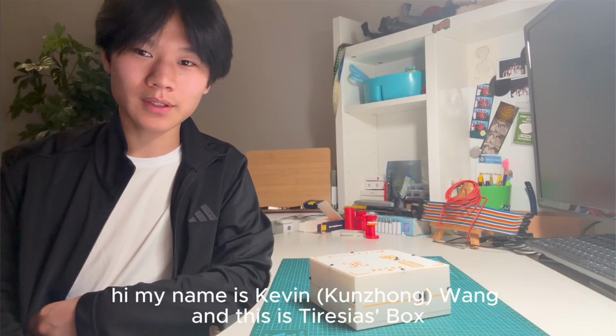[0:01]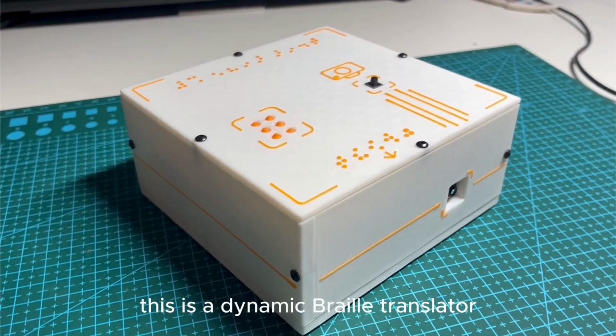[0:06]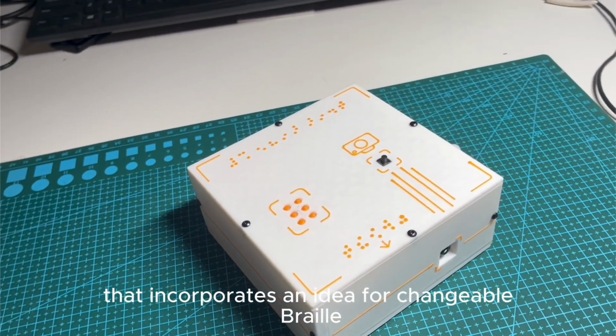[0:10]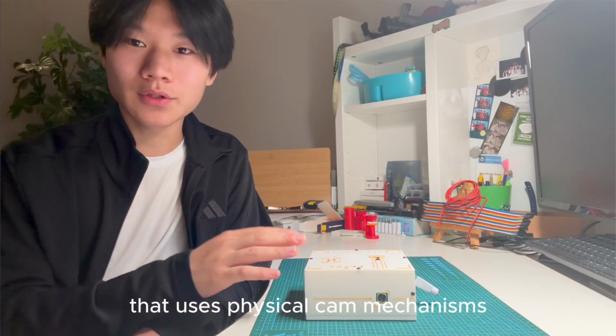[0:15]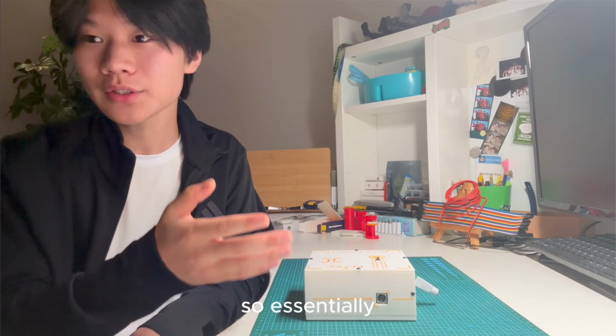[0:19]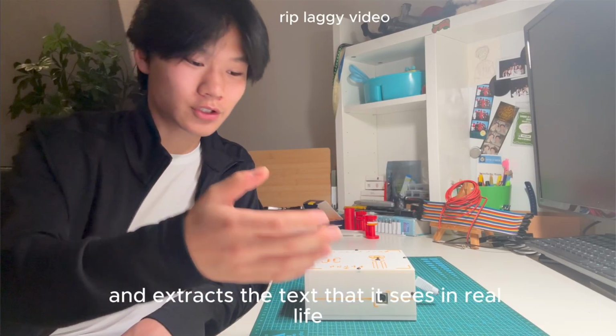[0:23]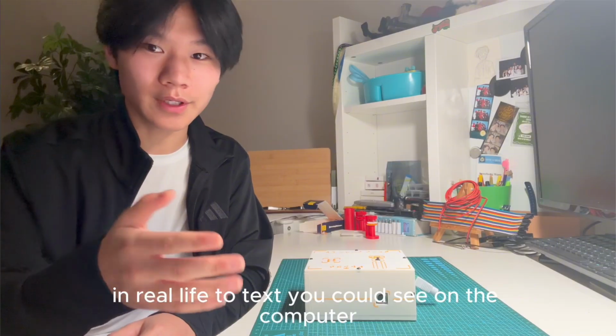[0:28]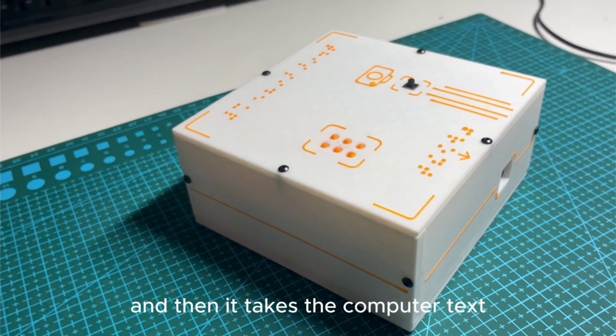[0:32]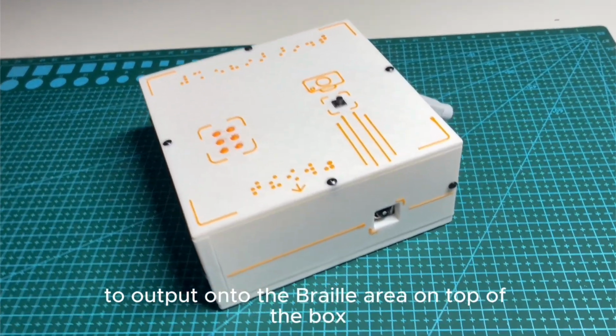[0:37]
This is a dynamic Braille translator for both English and Chinese that incorporates an idea for changeable Braille that's never been presented before. This is the first ever Braille actuator that uses physical cam mechanisms to change the positions of the Braille dots. So essentially, this takes a picture using this camera right here and extracts the text that it sees in real life, and changes it from English and Chinese text in real life to text you could see on the computer. And then it takes the computer text and translates it into Braille to output onto the Braille area on top of the box.
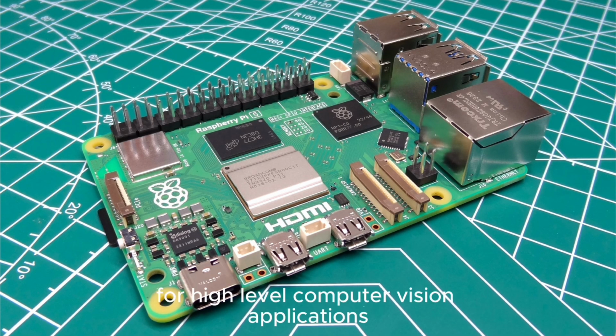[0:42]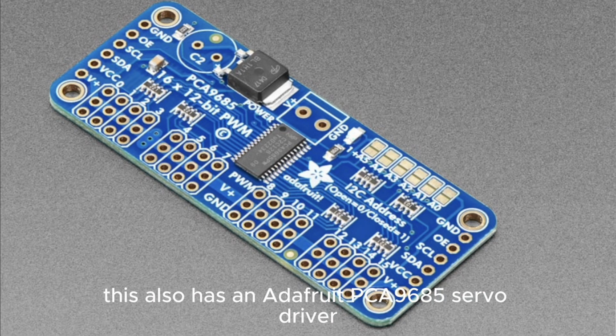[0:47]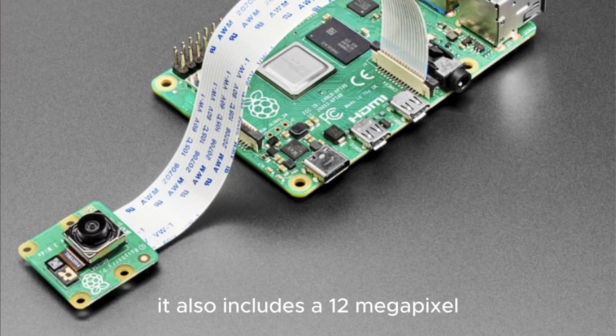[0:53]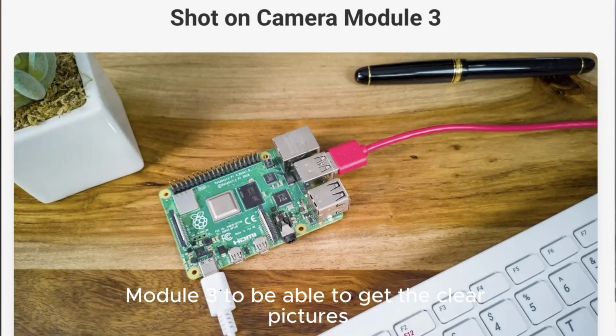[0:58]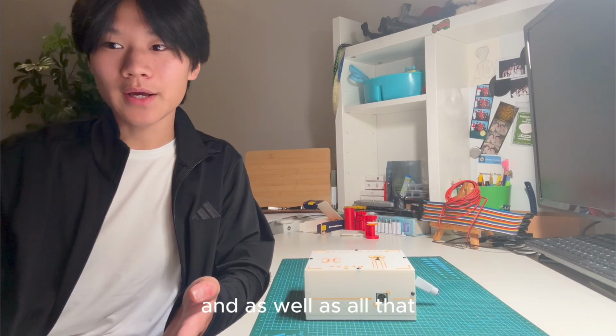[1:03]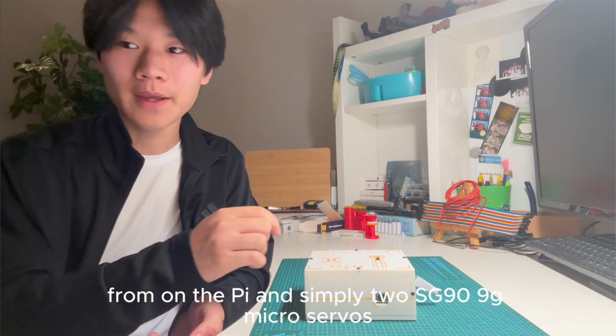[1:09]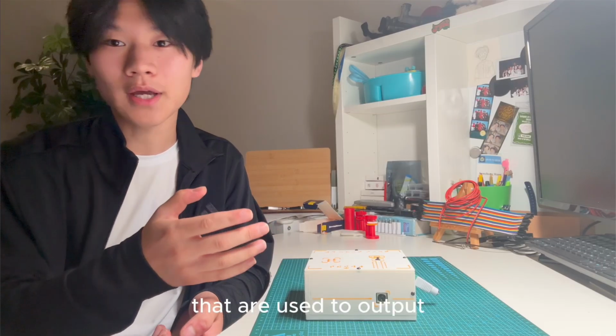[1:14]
This box is equipped with a Raspberry Pi 5 with 4GB RAM for high-level computer vision applications and electromechanical control. This also has an Adafruit PCA 9685 servo driver to safely power the servos used. It also includes a 12 megapixel autofocusing Raspberry Pi camera module 3 to be able to get clear pictures for CV analysis from any distance. And as well as all that, we also have a button soldered to two GPIO pins on the Pi and simply two SG90 9-gram micro servos that are used to output the entirety of the Braille alphabet as well as the number system.
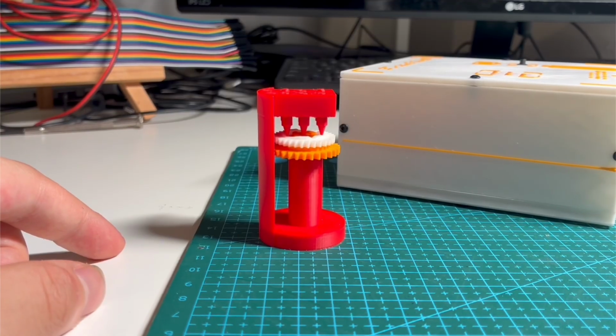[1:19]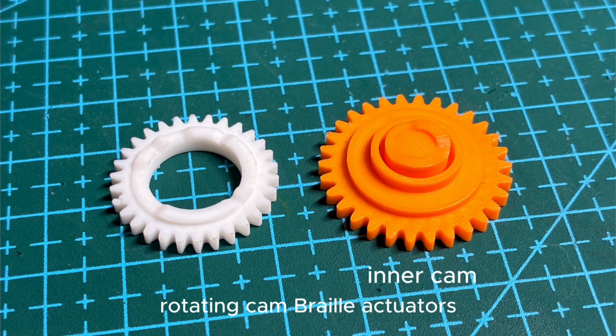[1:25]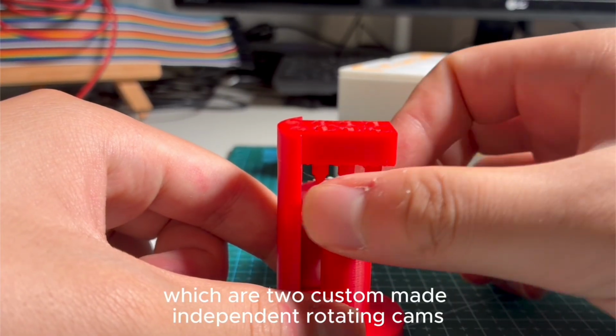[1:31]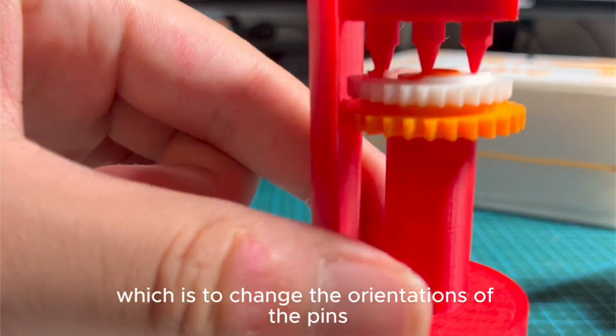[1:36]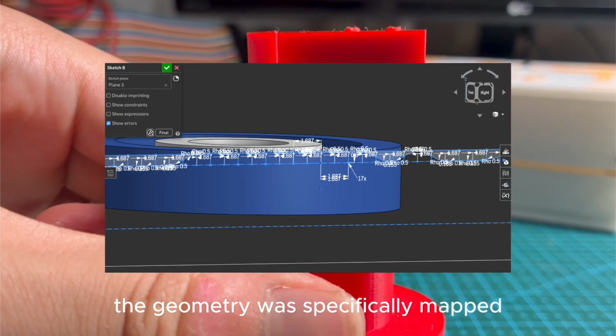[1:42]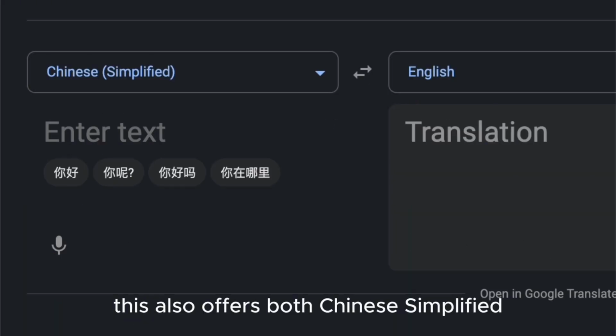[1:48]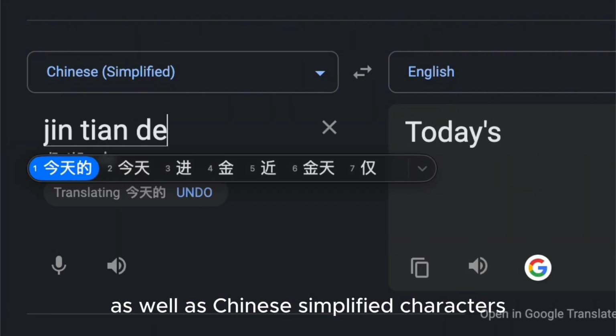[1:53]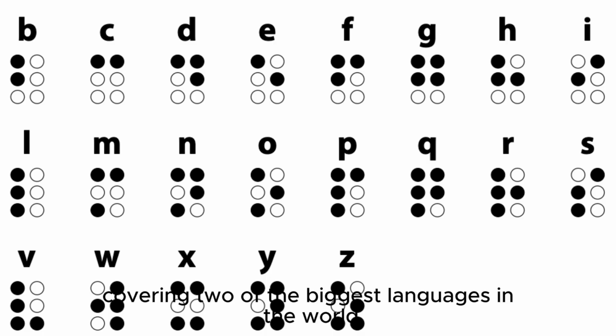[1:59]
So essentially, this project works by having these custom rotating cam Braille actuators, and this is the heart of the project, which are two custom-made independent rotating cams, each with a 3:2 gear ratio stacked on top of each other, which is to change the orientations of the pins, to be able to output every single letter in the Braille alphabet. The geometry was specifically mapped to be able to output all the letter combinations with the least amount of space. This also offers both Chinese simplified and English support, and this little box is able to extract English text as well as Chinese simplified characters and translate it into English and then to Braille, covering two of the biggest languages in the world.
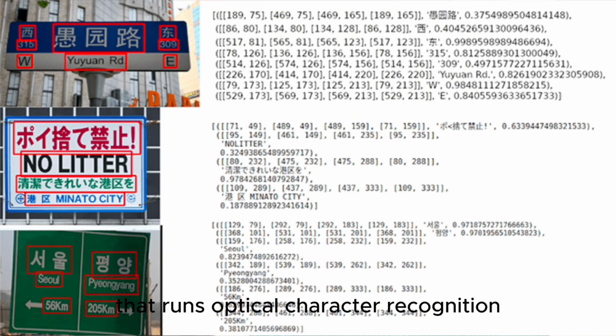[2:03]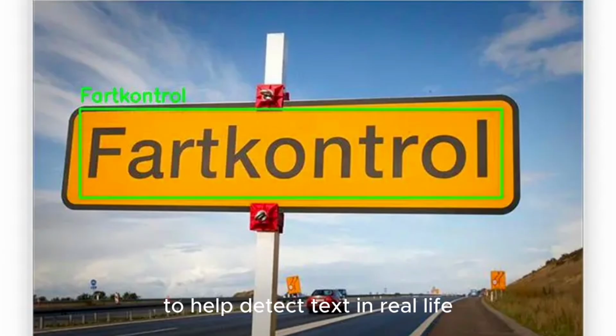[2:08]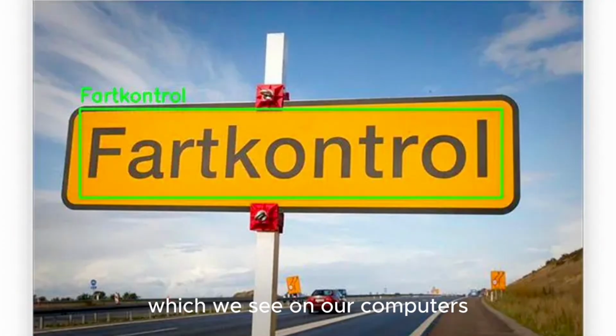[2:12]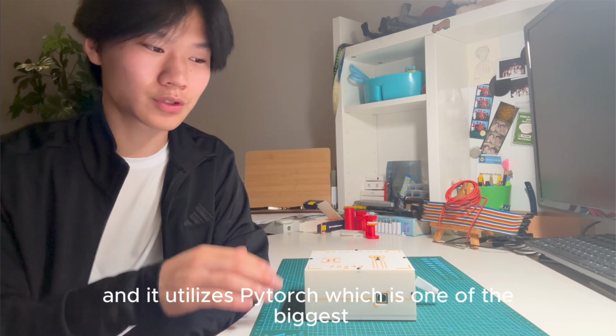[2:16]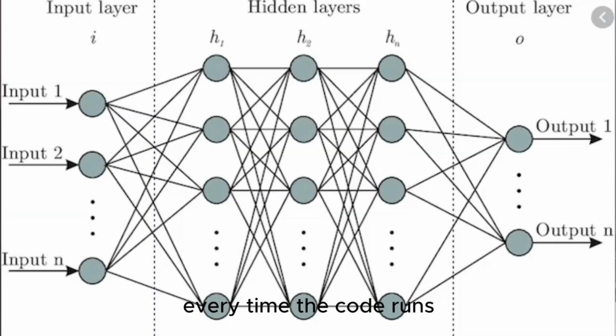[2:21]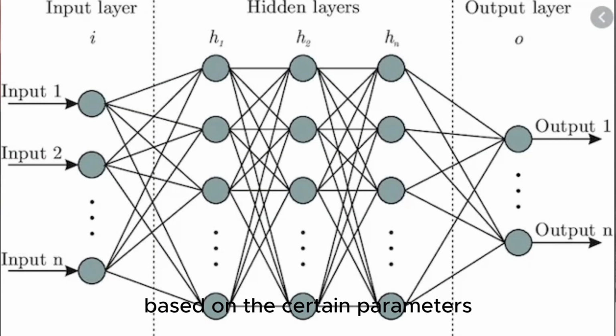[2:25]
The computer vision library I use is called EasyOCR, which is a library that runs optical character recognition, which is built on neural networks to help detect text in real life, and then convert it to the string characters which we see on our computers. I was able to code it directly with Python, and it utilizes PyTorch, which is one of the biggest machine learning frameworks for Python. Every time the code runs, the code creates a deep neural network model based on certain parameters to help you detect text and extract text in real life.
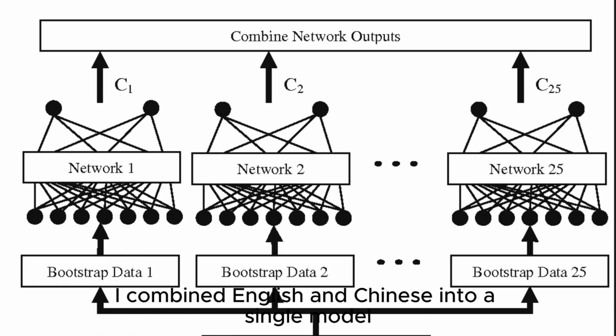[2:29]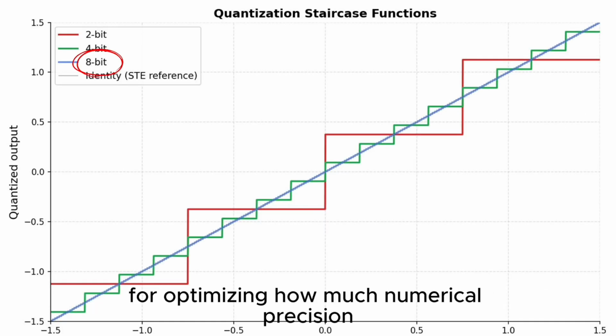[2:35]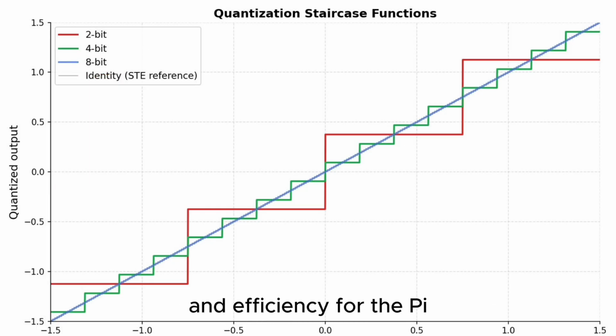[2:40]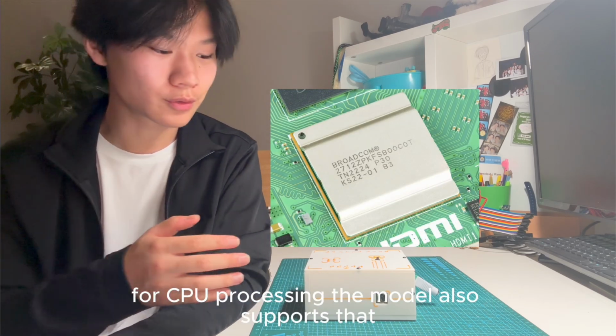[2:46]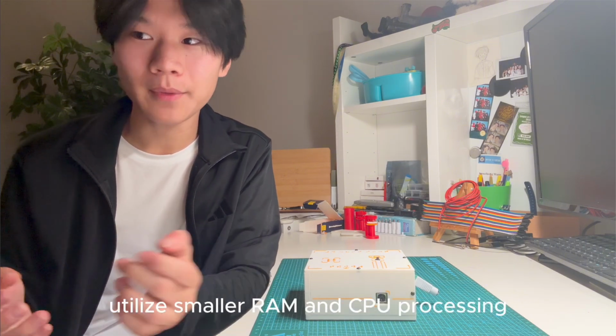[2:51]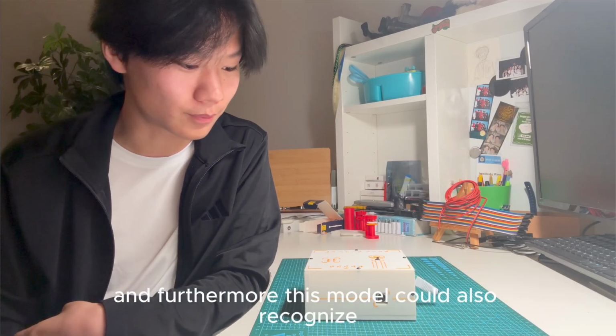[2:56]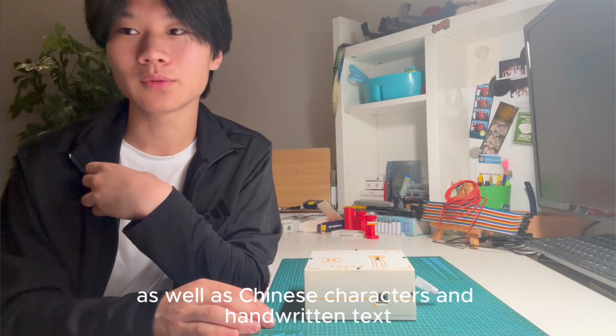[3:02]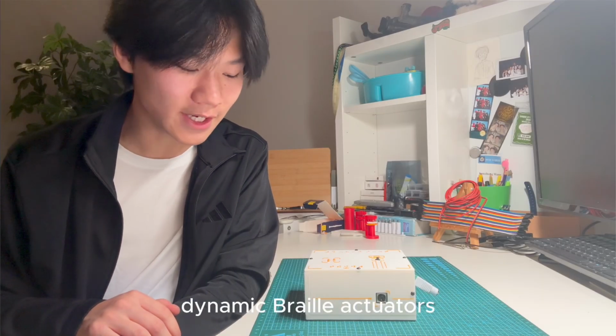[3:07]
I combined English and Chinese into a single model, as well as used a quantized model using 8-bit integers for optimizing how much numerical precision the model outputs, to reduce the latency and improve the processing speed and efficiency for the Pi. Since the Raspberry Pi is mainly used for CPU processing, the model also supports that, and using a quantized model, it is also able to utilize smaller RAM and CPU processing, which initially uses GPU and VRAM. And furthermore, this model could also recognize numerous different font sizes and font styles, as well as Chinese characters and handwritten text. So how is this different from existing dynamic Braille actuators?
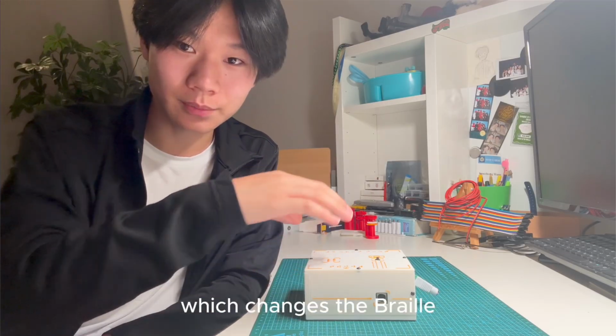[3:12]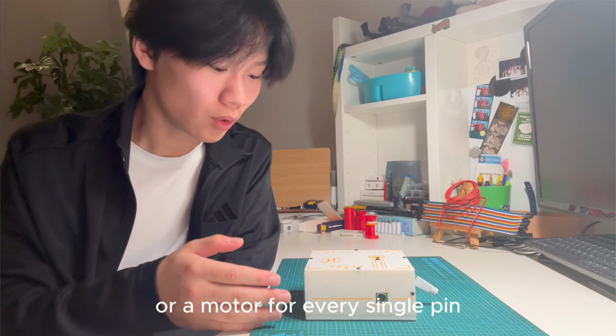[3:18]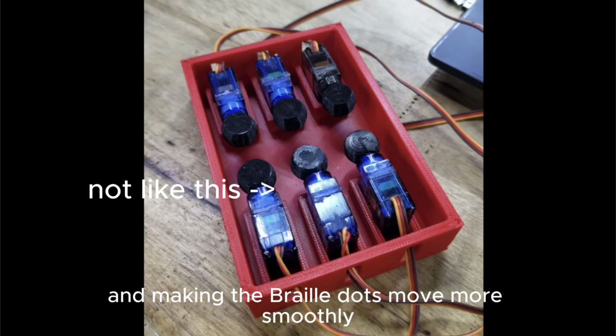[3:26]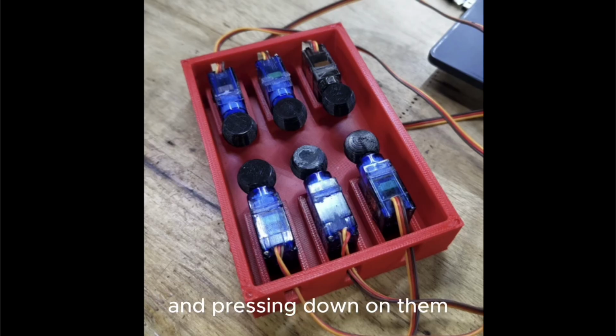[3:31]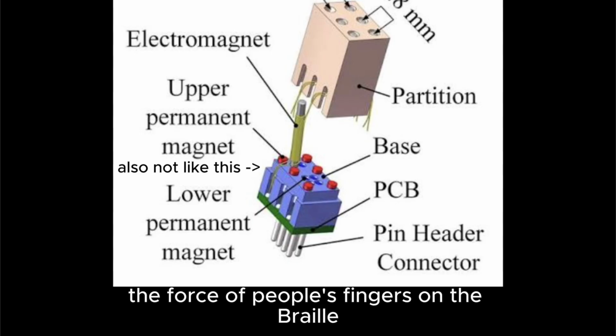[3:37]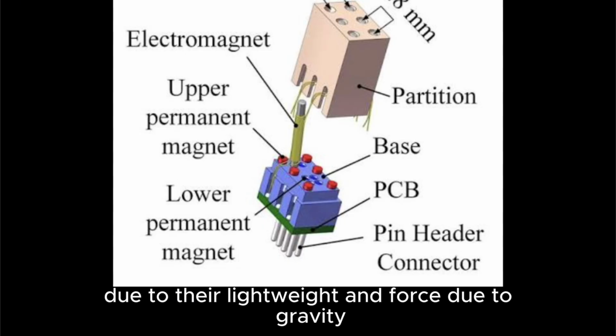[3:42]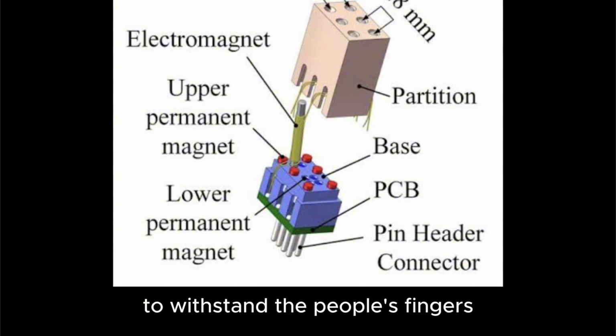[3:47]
So my unique approach uses a physical cam mechanism which changes the Braille rather than using existing models such as electromagnetic actuators or a motor for every single pin. Some of the main goals I hope to accomplish are using as few motors as possible and making the Braille dots move more smoothly but also stay rigidly in place when people's fingers are moving across them and pressing down on them. Many electromagnetic designs are not strong enough to hold up the force of people's fingers on the Braille, and the Braille pins in mine are in constant contact with the cam due to their light weight and force due to gravity, so they will have more than enough normal force to withstand people's fingers.
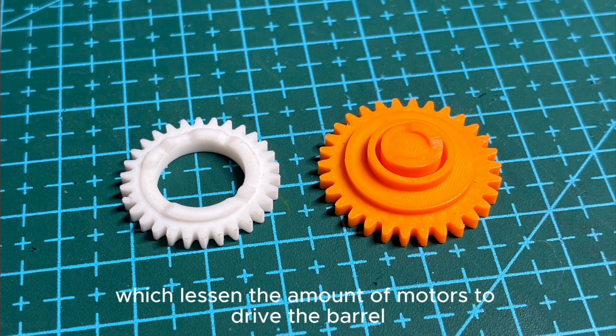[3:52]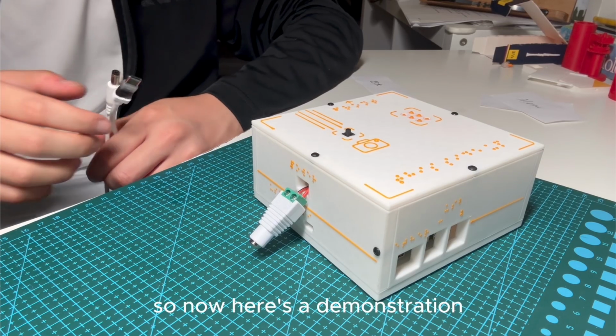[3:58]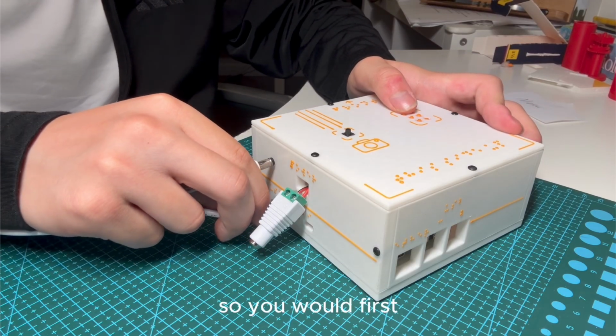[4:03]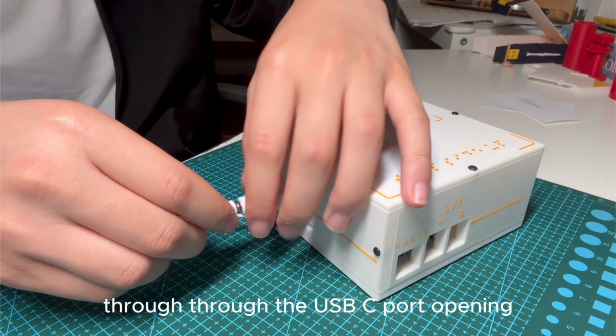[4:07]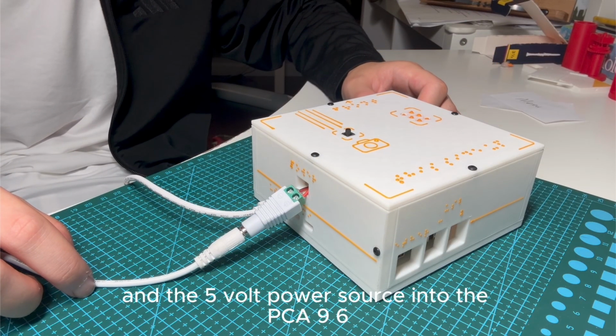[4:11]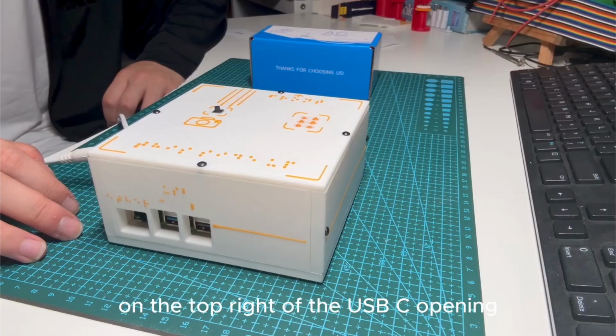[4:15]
Furthermore, I also separated the cams into an inner and outer cam, which lessened the amount of motors to drive the Braille down to 2 servos to control the movement of all 6 pins. So now here's a demonstration of how this Braille actuator works. So you would first plug in the USB-C power source into the Raspberry Pi through the USB-C port opening, and the 5-volt power source into the PCA 9685 through the opening on the top right of the USB-C opening.
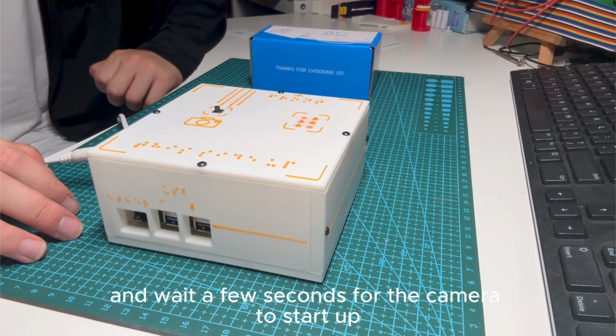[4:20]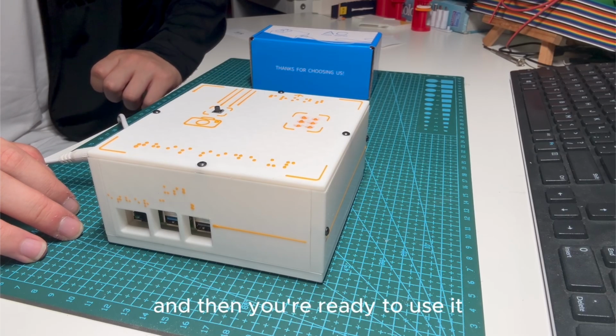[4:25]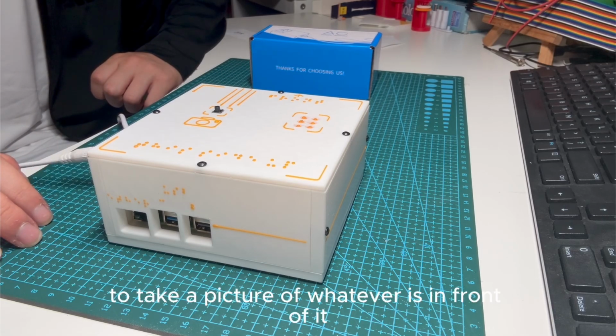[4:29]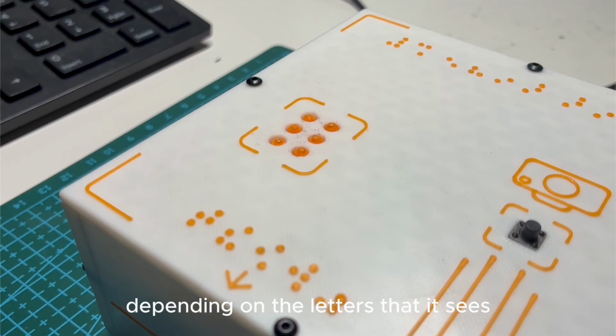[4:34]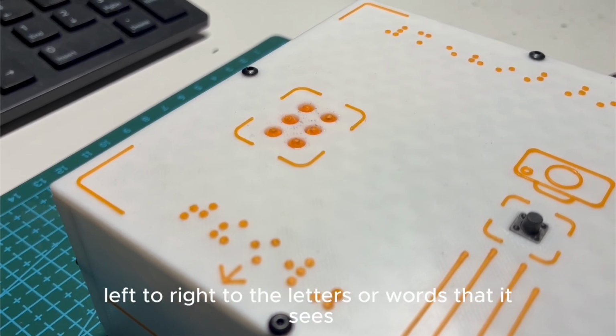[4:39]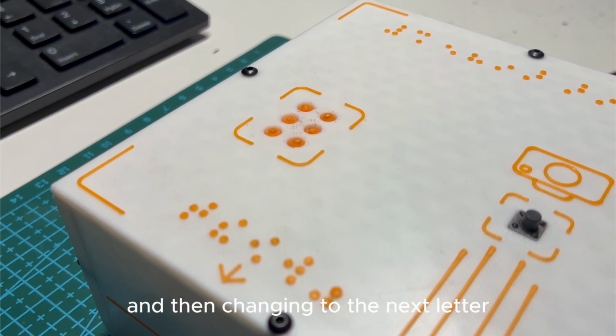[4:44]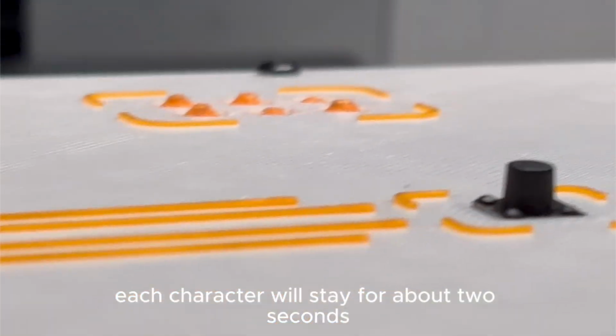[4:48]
Secondly, you would boot up the Raspberry Pi and wait a few seconds for the camera to start up and adjust to its surroundings, and then the Braille will move to its initial positions and then you're ready to use it. And then third, press the button to take a picture of whatever is in front of it, and the dynamic Braille will automatically change depending on the letters that it sees. It will go in order from left to right to the letters or words that it sees, first displaying the leftmost letter, and then changing to the next letter, and so on until all the text is displayed. Each character will stay for about 2 seconds until the next one is displayed.
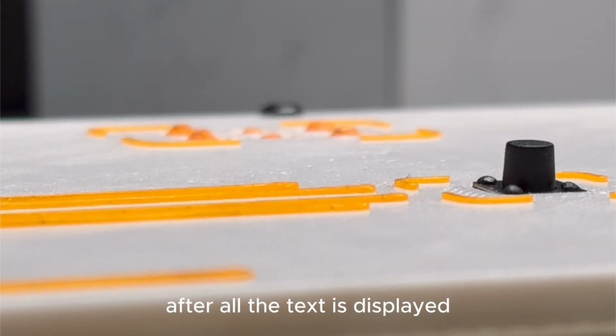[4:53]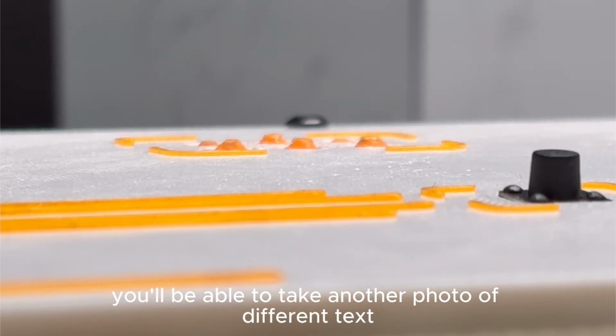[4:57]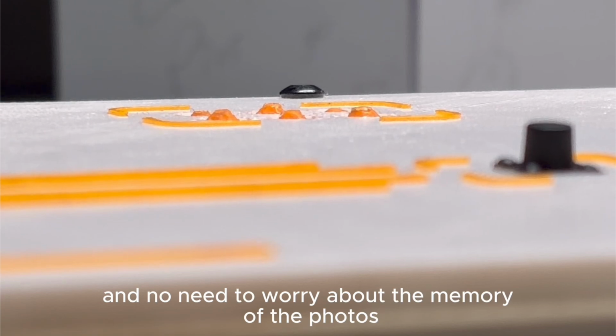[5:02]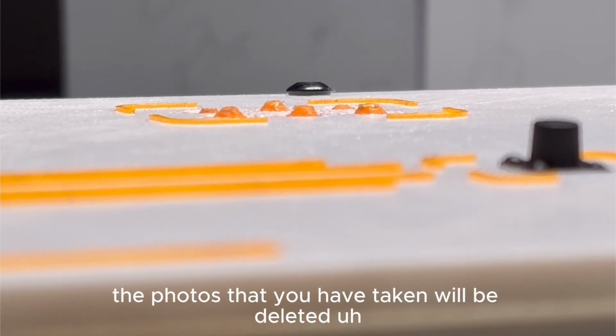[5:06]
After all the text is displayed and the Braille is no longer changing, you'll be able to take another photo of different text and it'll show those different texts. And no need to worry about the memory of the photos, since after each translation, the photos that you have taken will be deleted to save storage.
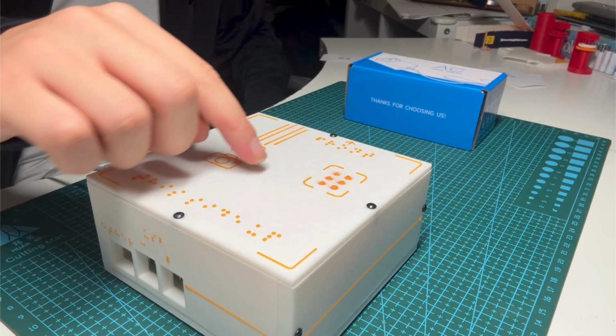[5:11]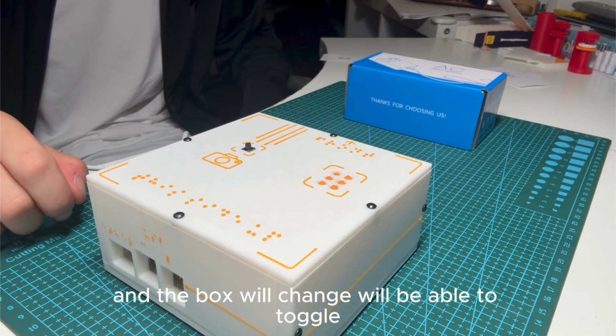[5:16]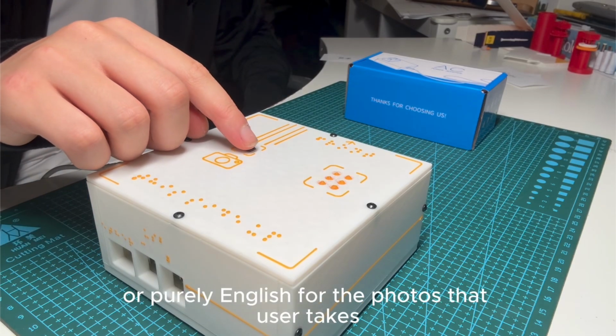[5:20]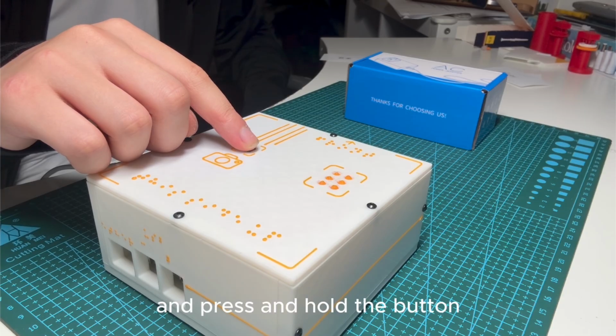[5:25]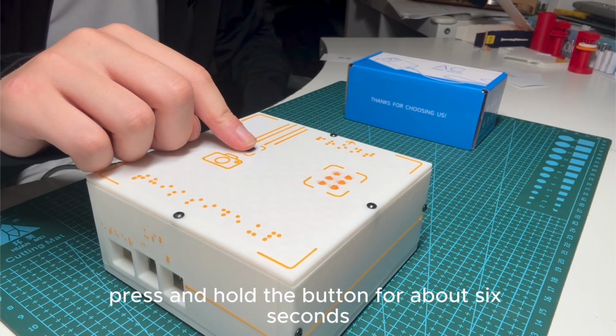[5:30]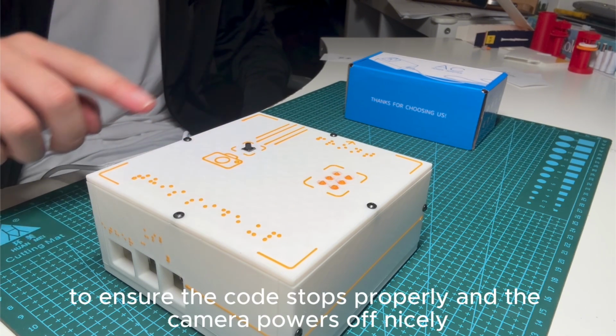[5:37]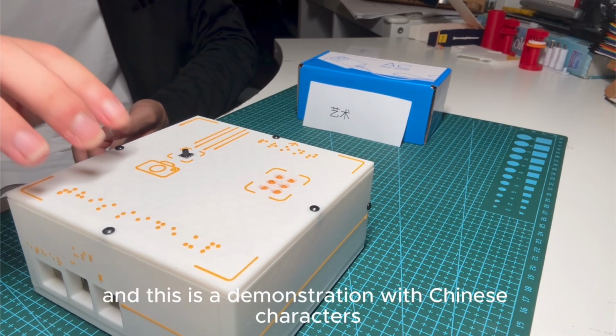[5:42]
You could also press the button for about 3 seconds, and the box will change. We'll be able to toggle and translate from Chinese to English or purely English for the photos that the user takes. The Braille that is displayed will be in English, and press and hold the button to switch the detection model again. And then press and hold the button for about 6 seconds, and the code will stop and the camera will power off. Make sure you do this every time to ensure the code stops properly and the camera powers off nicely. And this is a demonstration with Chinese characters, which means art in Chinese.
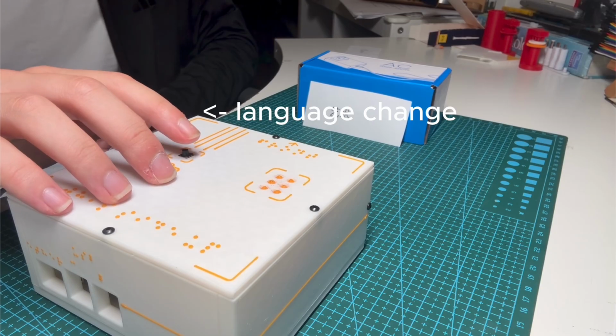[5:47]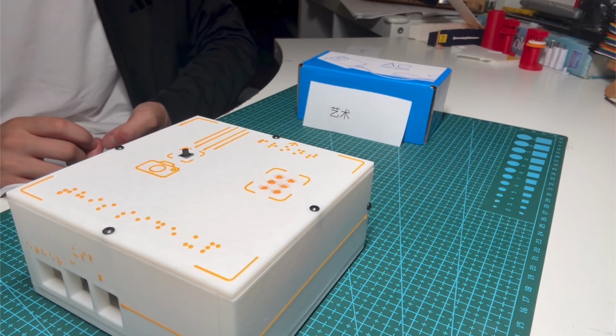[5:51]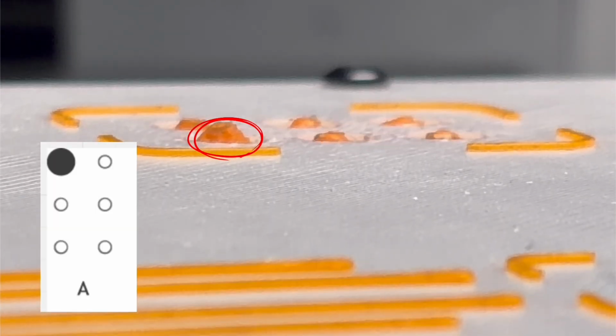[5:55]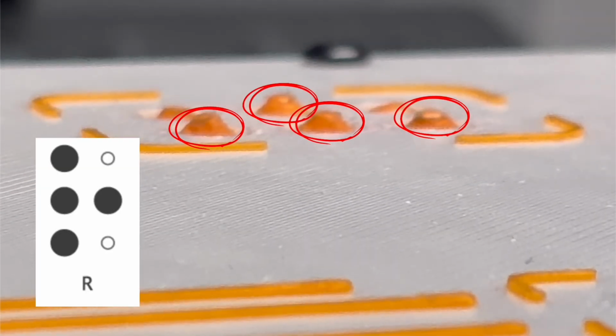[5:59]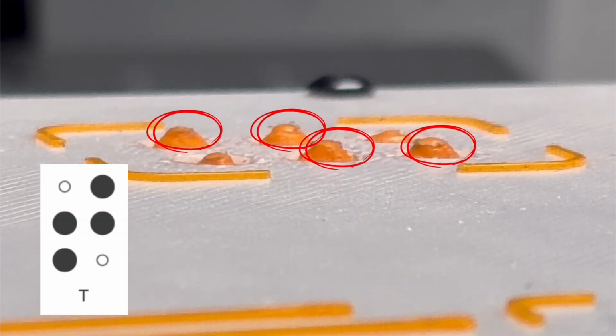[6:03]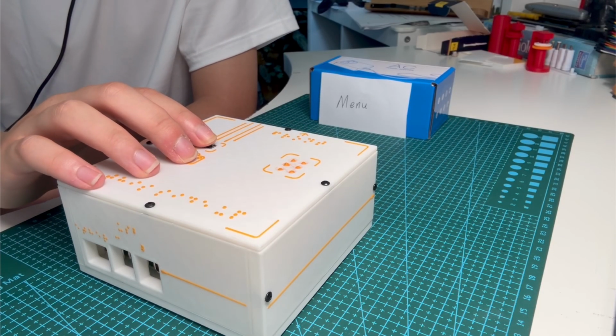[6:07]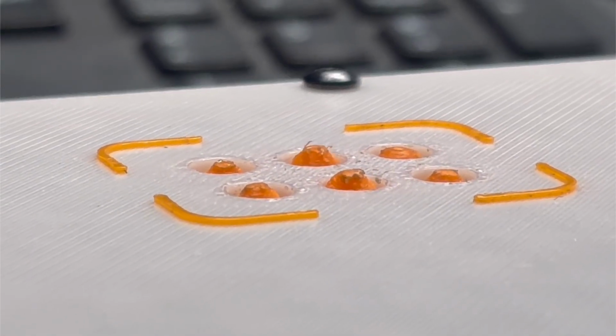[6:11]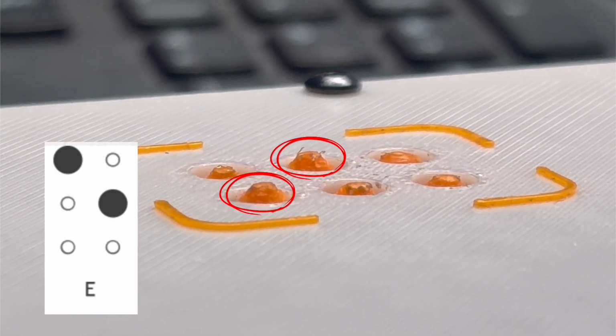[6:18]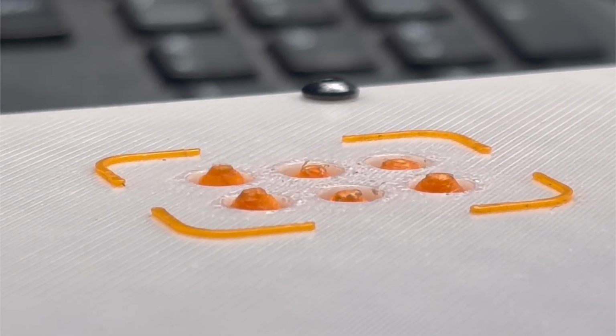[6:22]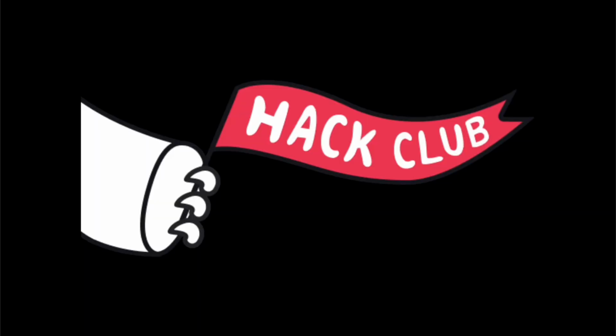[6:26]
Here's a demonstration with handwritten text with menu.